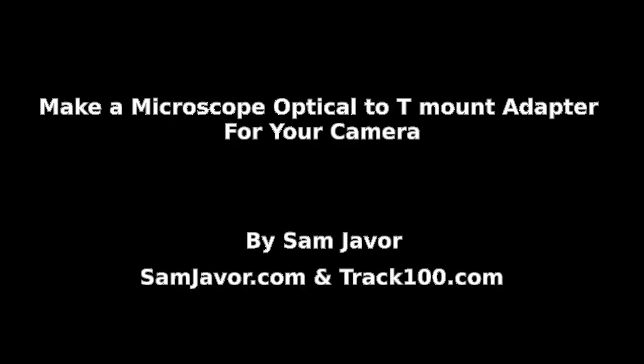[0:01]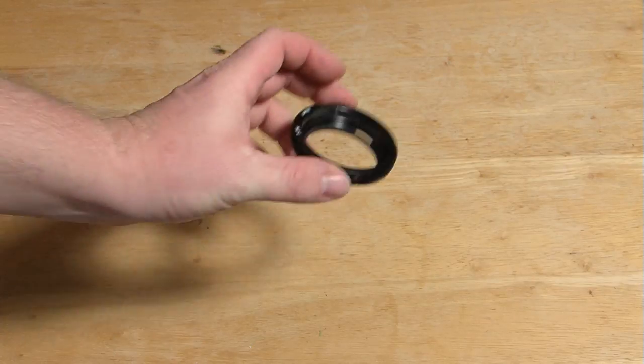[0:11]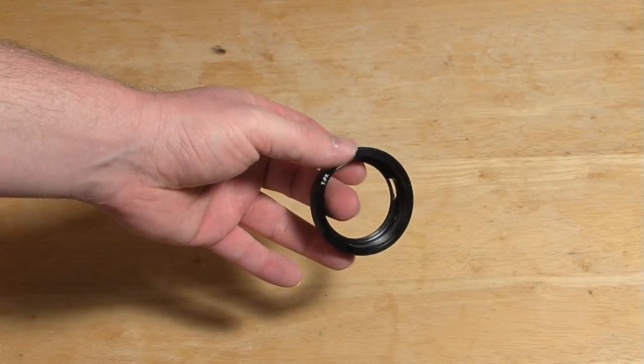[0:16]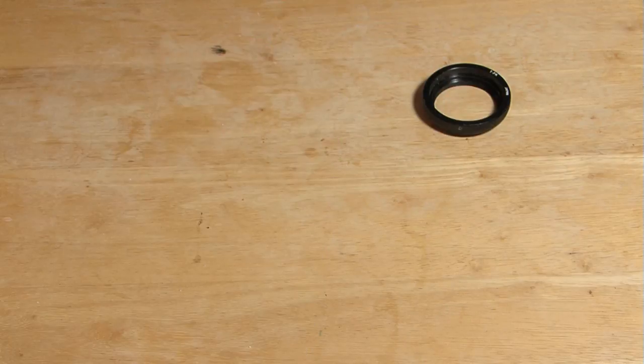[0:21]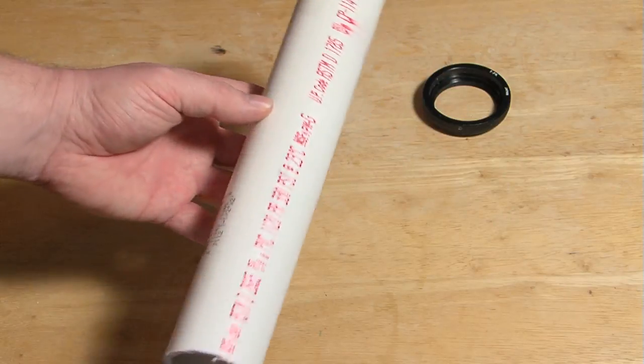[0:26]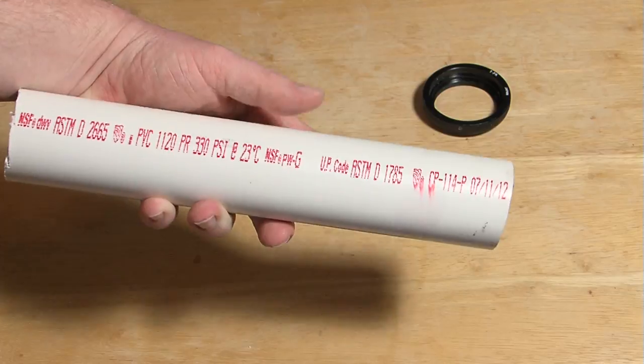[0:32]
I'm going to show you how to inexpensively mount a microscope optical to a camera. You will need a T-mount adapter for your camera. I use Pentax cameras, so this is a T-mount to Pentax K-mount. You will also need a short length of PVC pipe. This is 1.5 inch PVC. It's very important that it's 1.5 inch because this actually fits right into a T-mount.
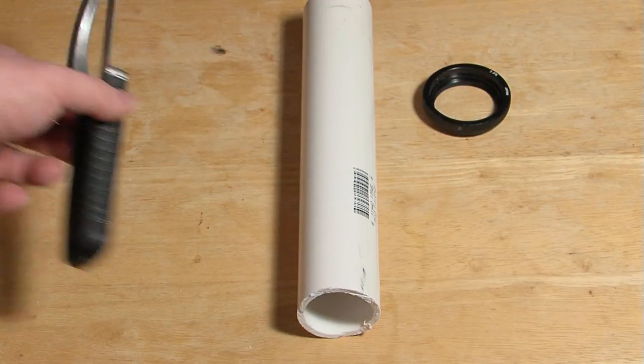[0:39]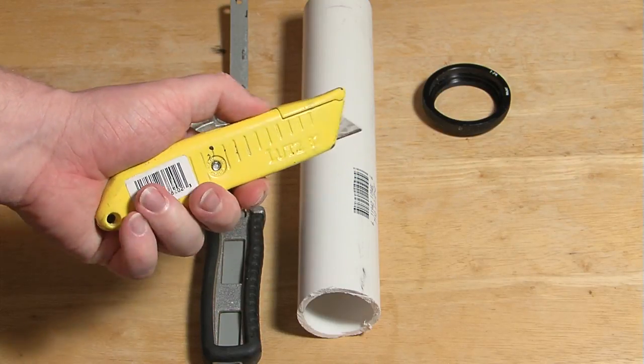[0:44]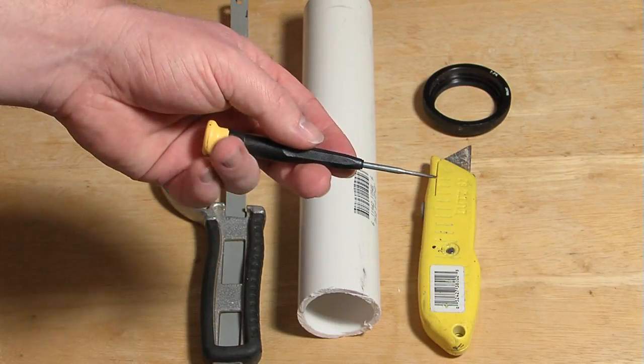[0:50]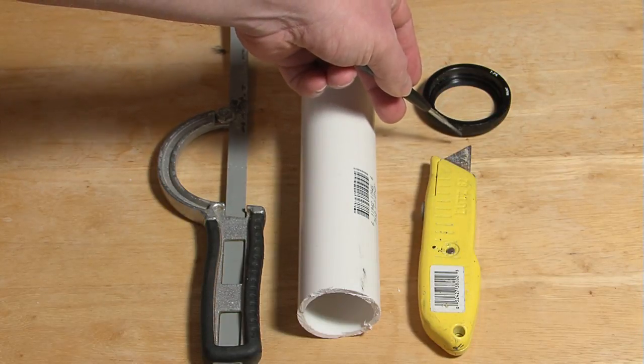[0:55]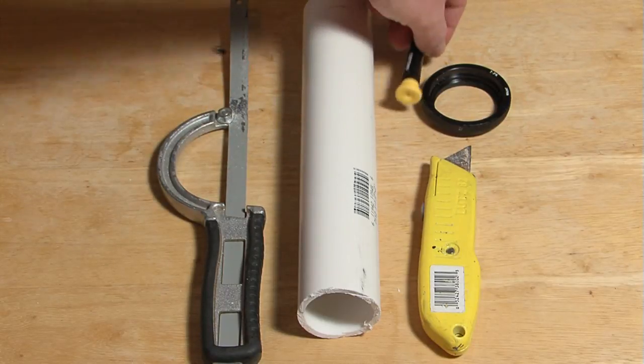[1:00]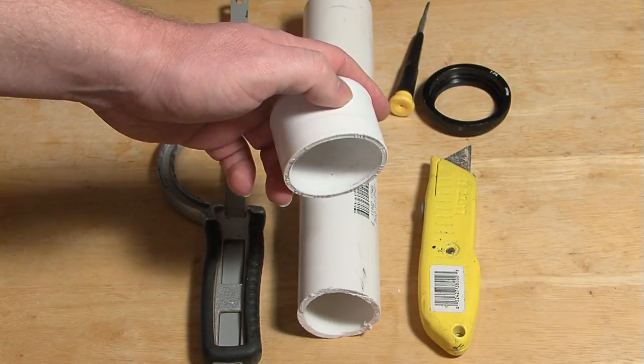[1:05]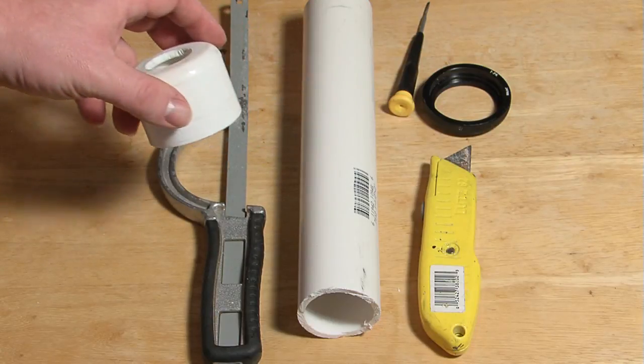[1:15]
You will also need a saw, a box cutter, or other knife, a small screwdriver, and this is used for operating the screws used to attach the T-mount adapter to the T-mount that we are going to create out of the PVC. A PVC end cap. I've already cut a hole in this one, but I will be explaining that.
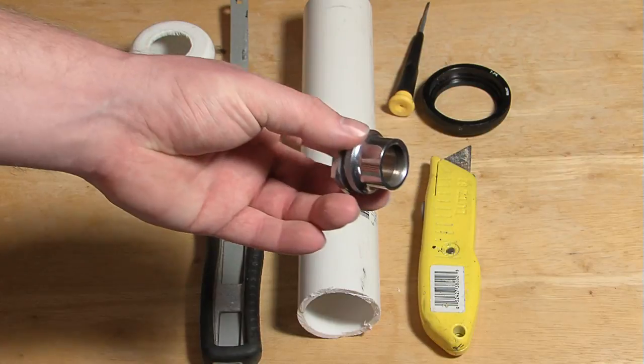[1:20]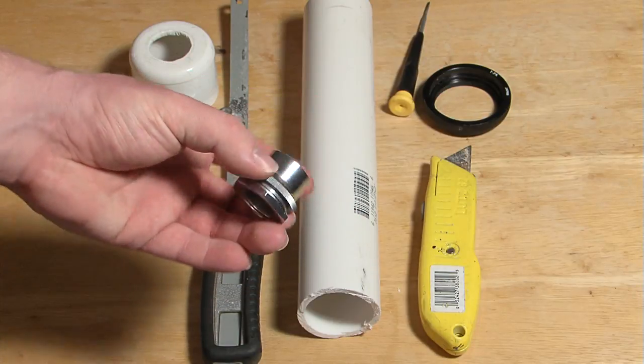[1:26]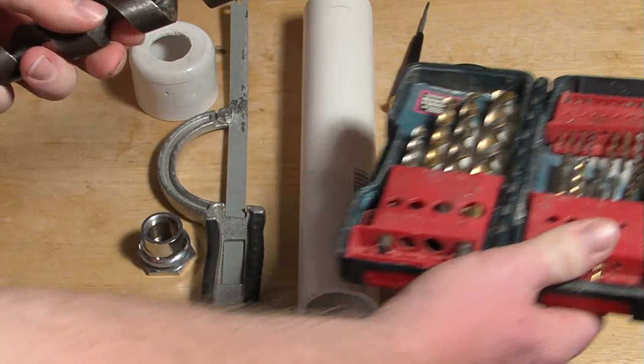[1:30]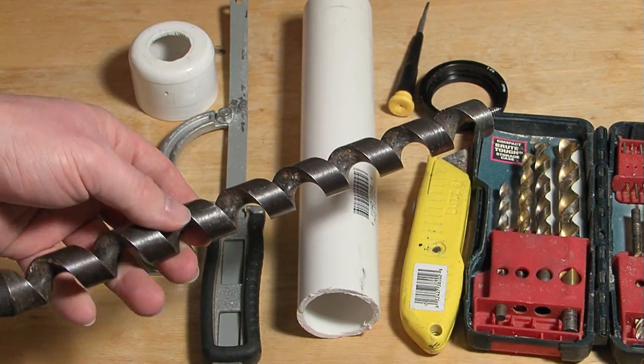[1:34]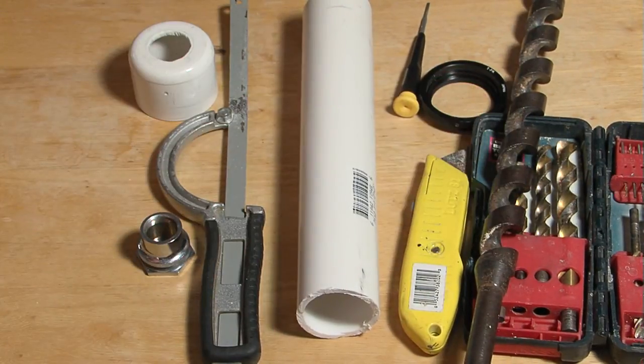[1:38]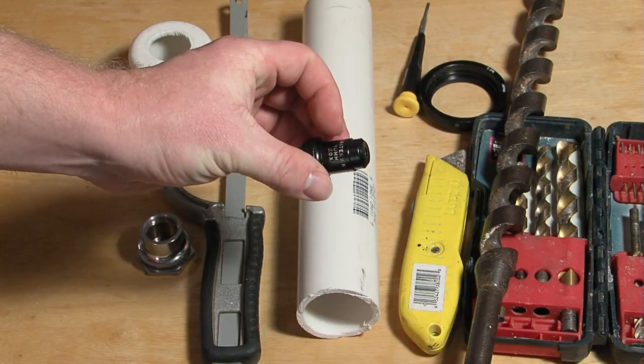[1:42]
You will also need a microscope optical mount. This allows for the quick and easy removal of the actual microscope opticals. A set of drill bits. And possibly an auger. And finally, a microscope optical.
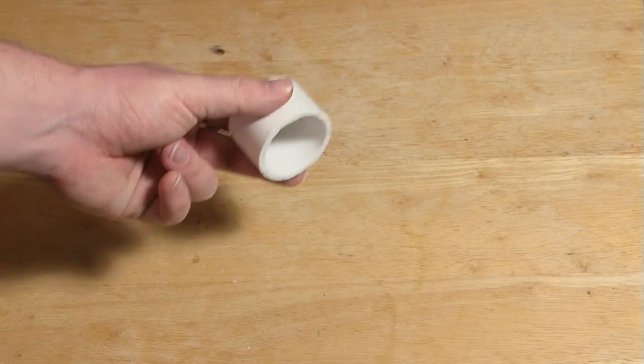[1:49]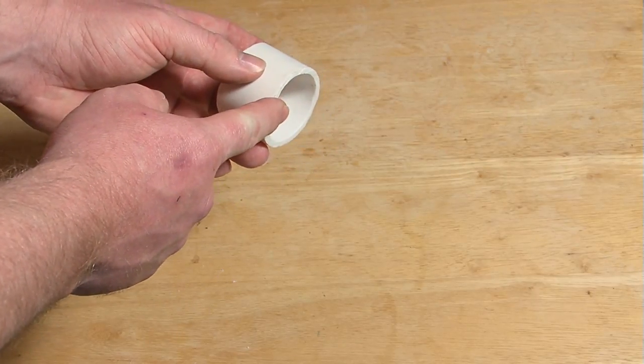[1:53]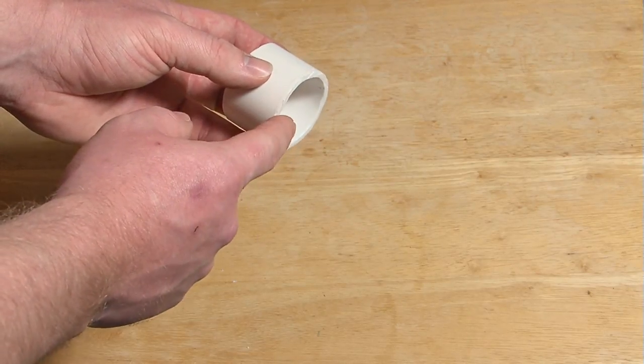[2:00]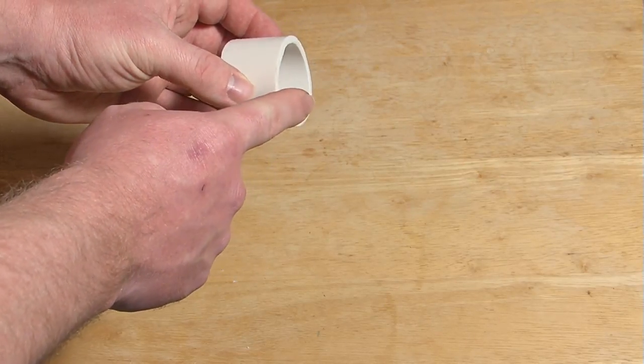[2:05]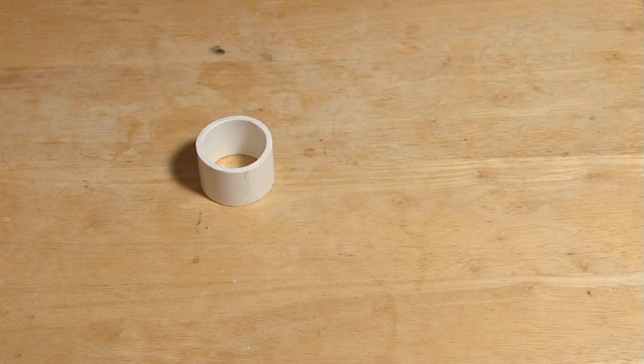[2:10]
We are going to begin by cutting the short length of pipe into an even shorter length of pipe. The important thing is to make sure that at least one end is flat, because this is going to be mounting into the T-mount itself, and there's not a whole lot of room for having a rough edge like you would on the cap end. You can do this in a couple ways. Hopefully you have a new piece of pipe and the factory has already cut a flat end on one end.
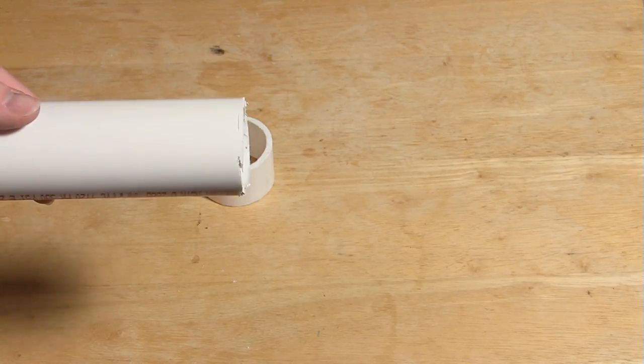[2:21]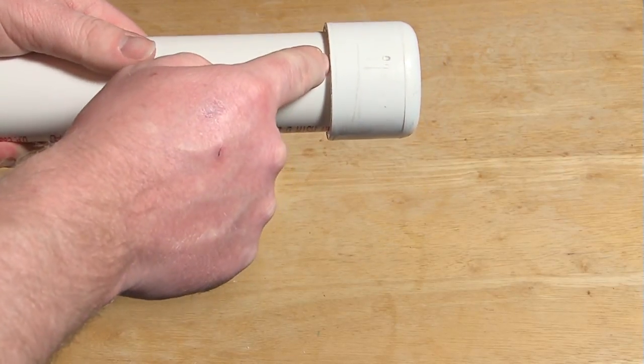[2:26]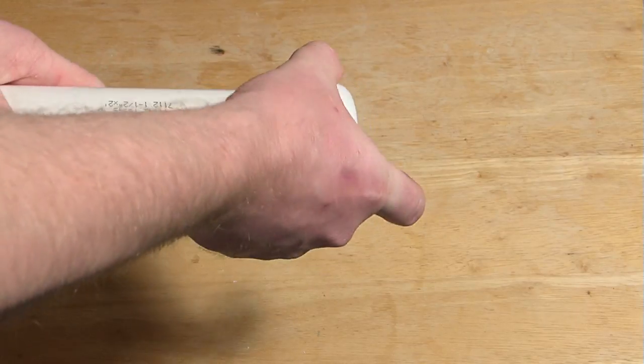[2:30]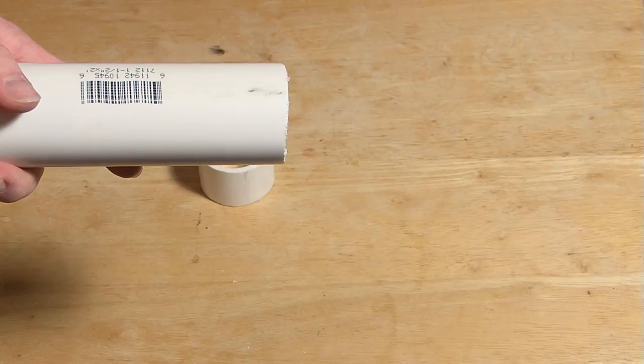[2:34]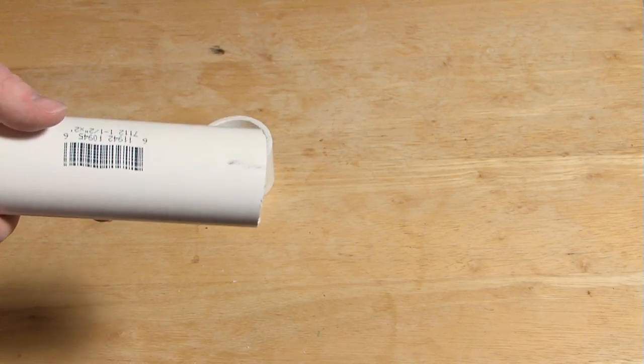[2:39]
However, if you don't, you can take the piece of pipe and put the end cap on and then with a pencil write a line all the way around, take the cap off, and then just cut along the line the entire circumference of the pipe. That should give you a straight enough edge. In fact, that's what I did on this one.
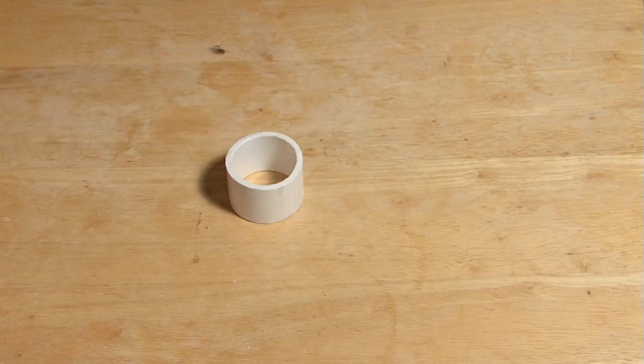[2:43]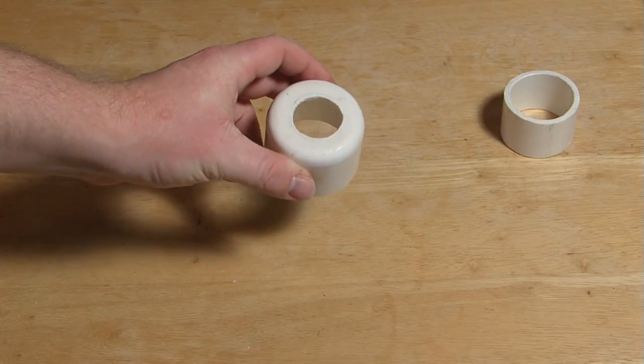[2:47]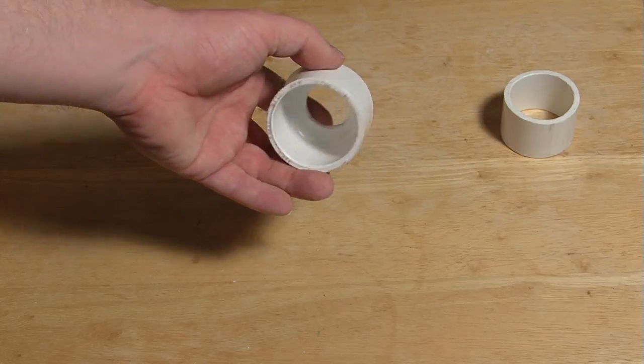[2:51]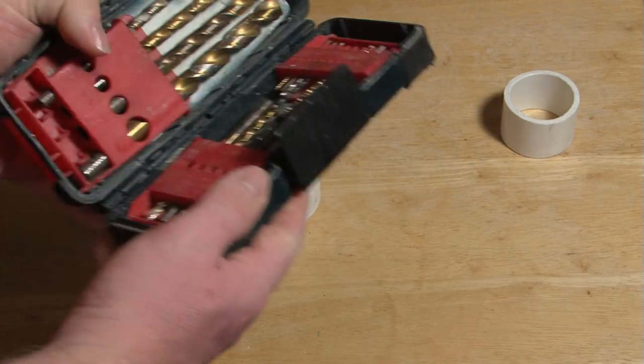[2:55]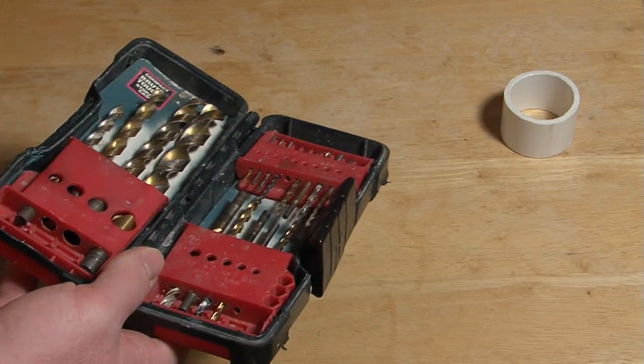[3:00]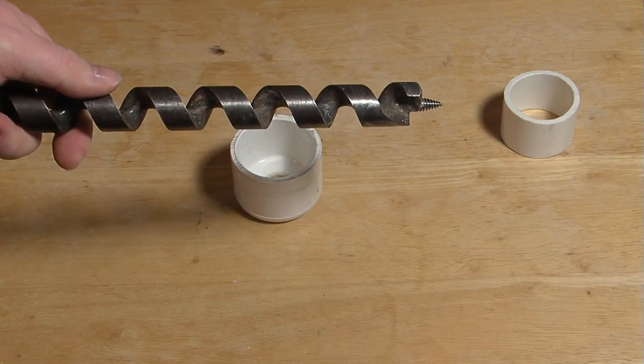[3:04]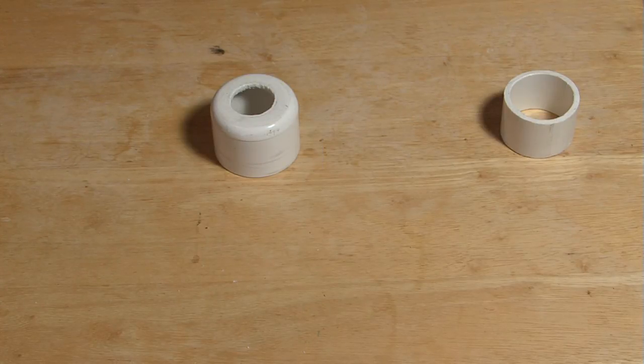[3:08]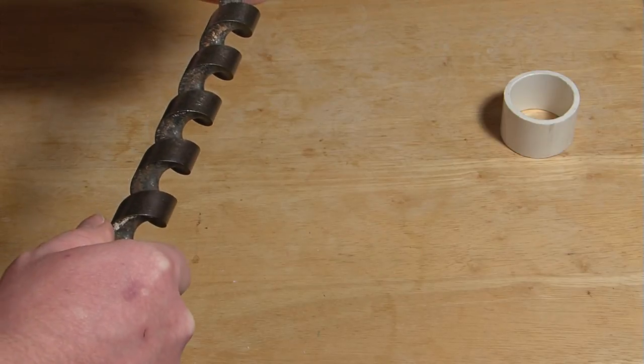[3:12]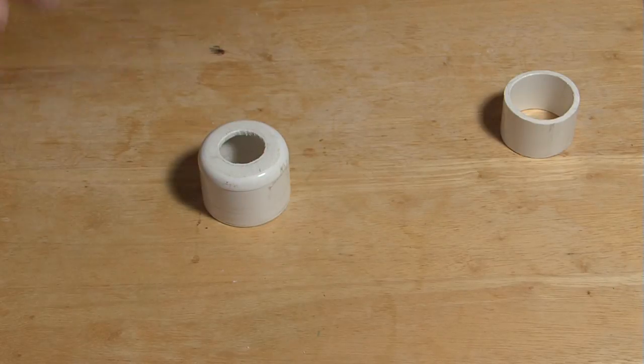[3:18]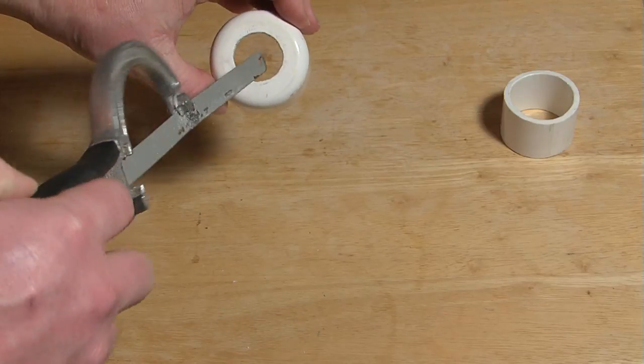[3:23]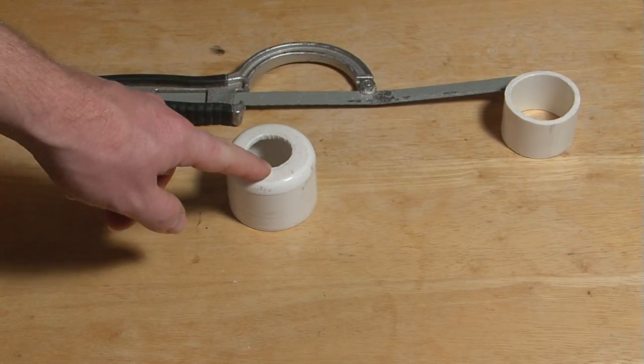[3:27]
Now the difficult part. We need to cut a hole inside this cap. The best way to do this is to drill a small pilot hole with one of the small drill bits, and then enlarge the hole. You may have an auger that can significantly enlarge the hole. The problem that I ran into is that my auger is still too small for the hole. So I drill the hole as large as I could, and then I take the saw and just score around the edge of the hole to slowly enlarge it. It's tedious. It is important to make sure that the hole stays fairly centered and as round as you can possibly keep it.
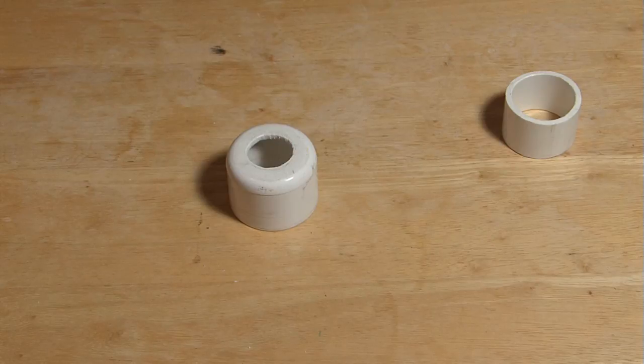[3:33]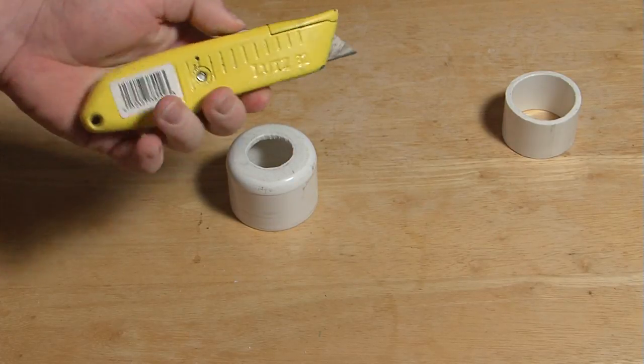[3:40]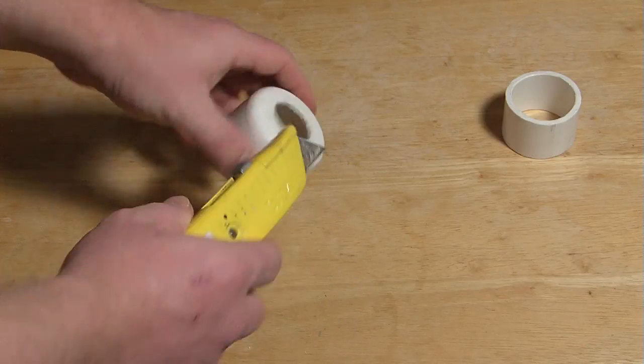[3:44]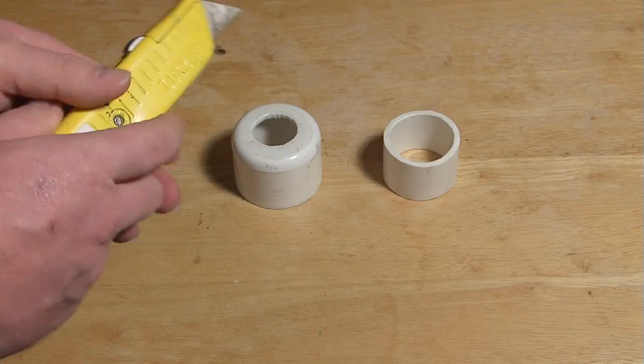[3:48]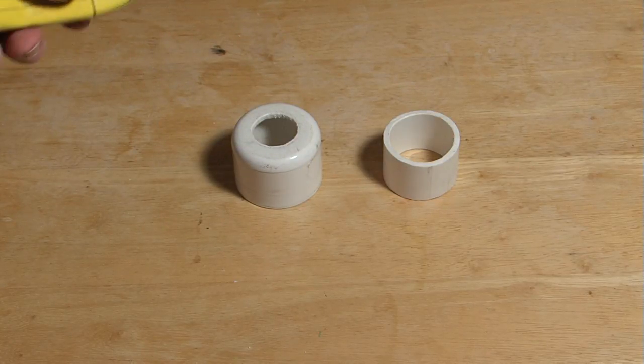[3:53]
When that is complete, simply take the box cutter and clean off any plastic burrs that you may have in any of the pipes. You don't want any frayed PVC bits. It'll be fairly obvious if you've ever cut PVC. Then that's pretty much it. All that needs to be done is assembly.
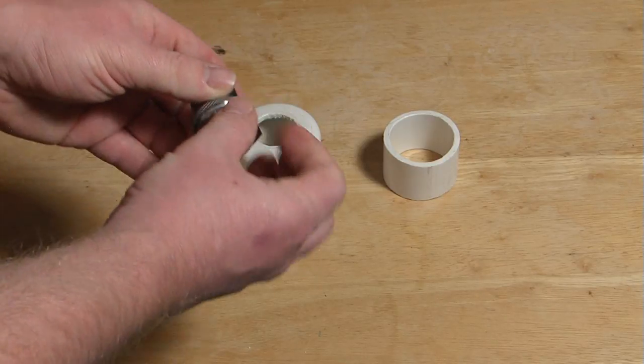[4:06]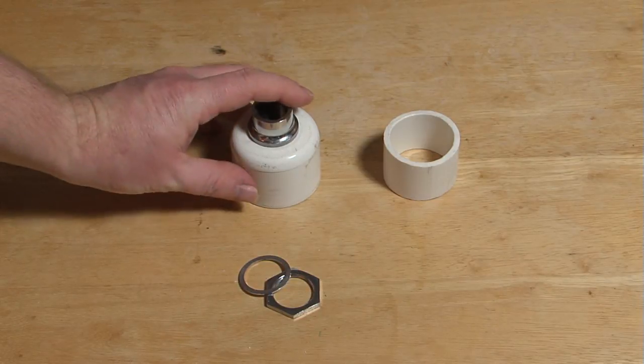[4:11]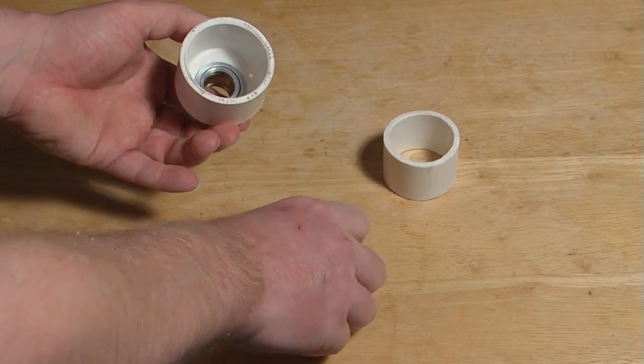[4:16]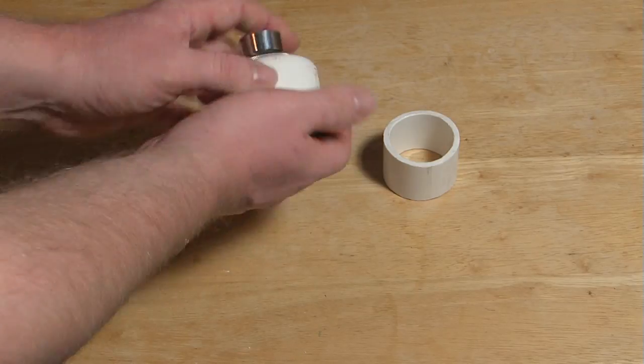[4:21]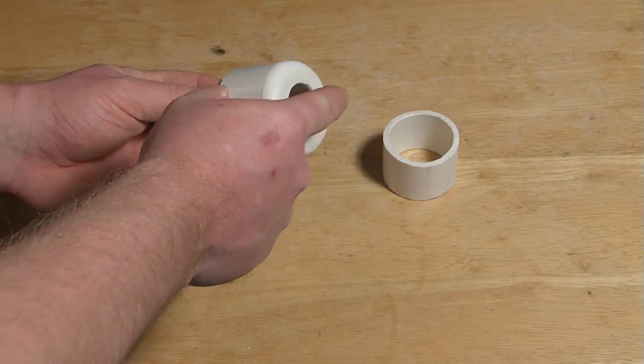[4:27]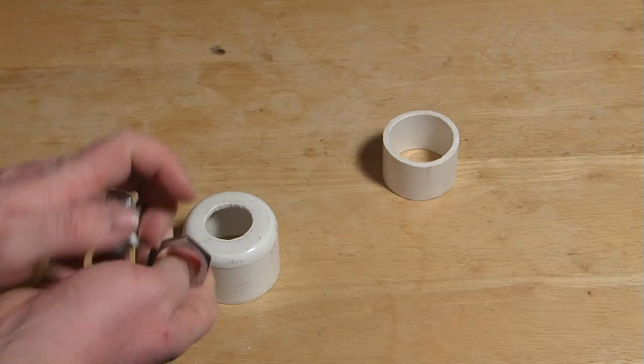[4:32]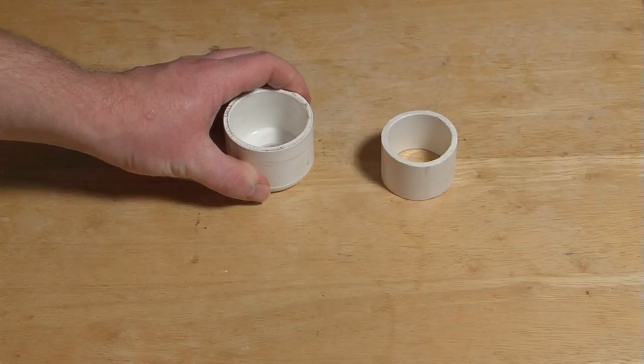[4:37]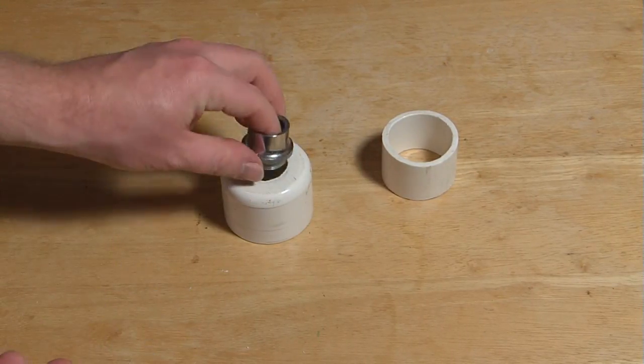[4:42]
We're going to begin by putting the microscope mount into the hole. Mine comes with a washer. We're going to place that in, and then the washer attaches inside. One thing to keep in mind, depending on your PVC end cap, mine was originally too thick for this nut to fit on the thread. To correct that, I laid down a piece of sandpaper and then just sanded it flat. It worked pretty well and was fairly quick.
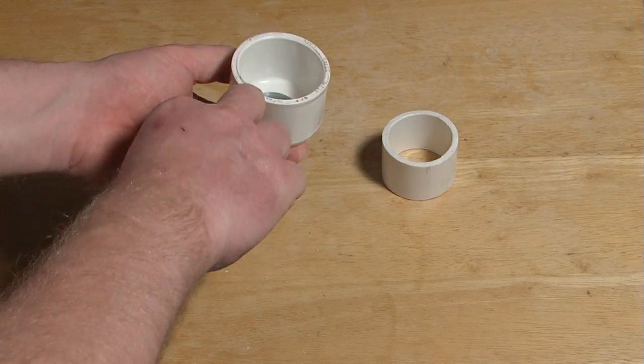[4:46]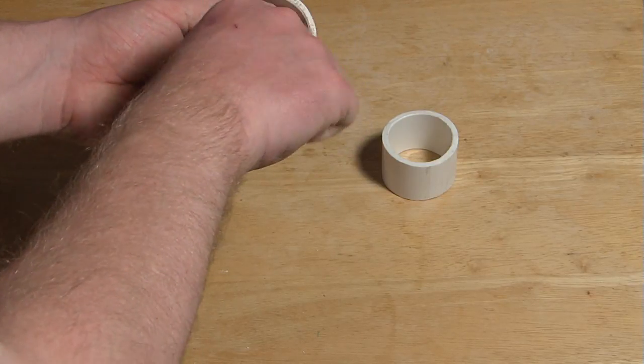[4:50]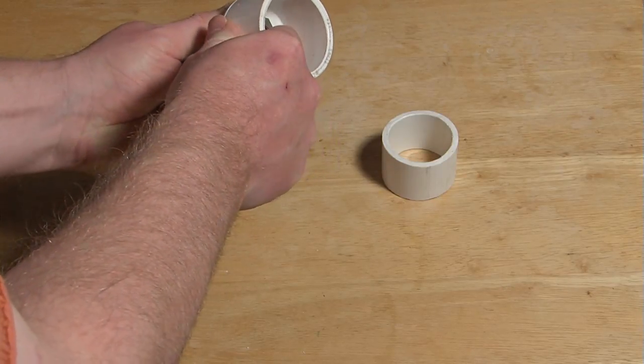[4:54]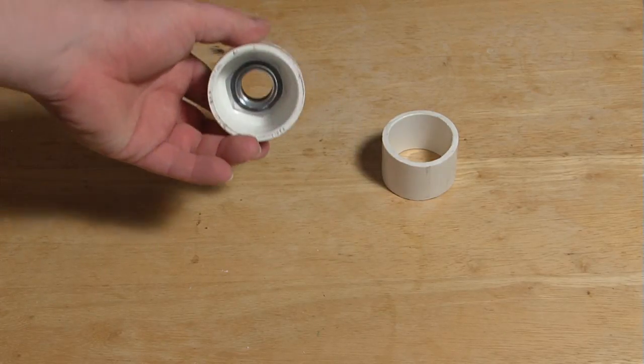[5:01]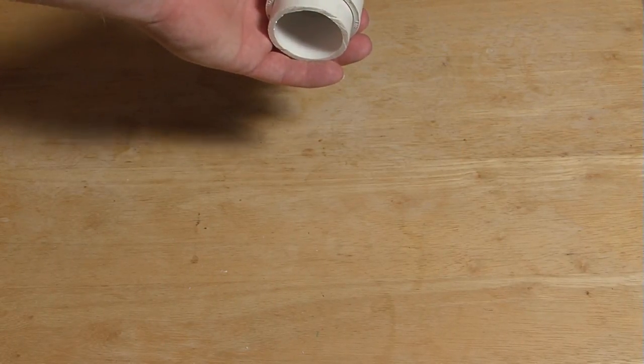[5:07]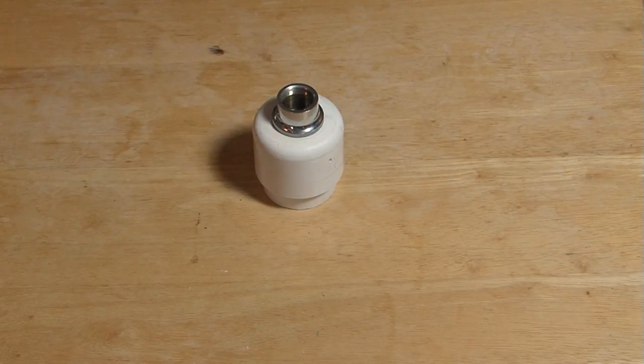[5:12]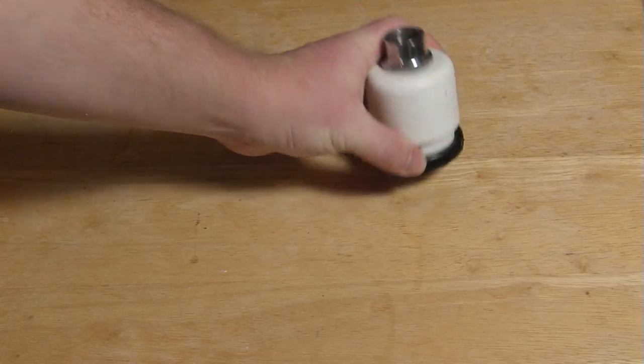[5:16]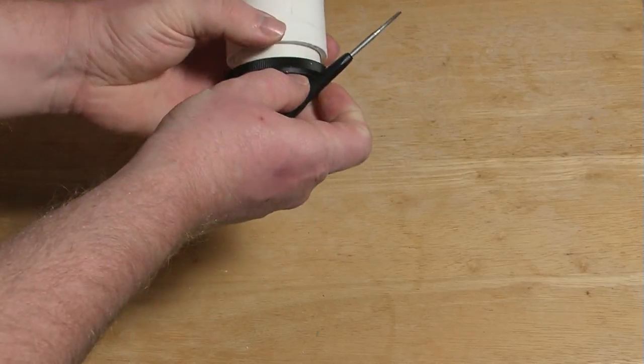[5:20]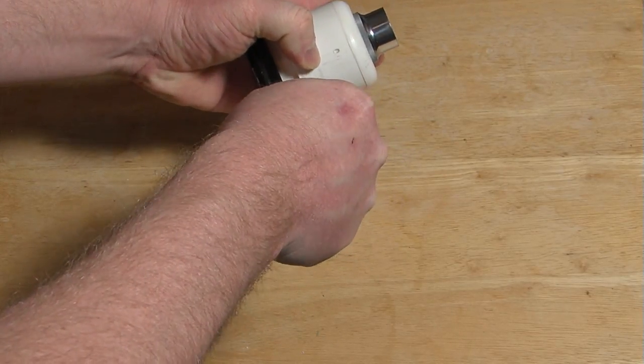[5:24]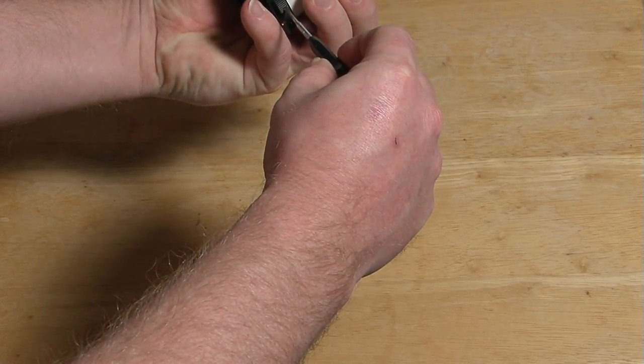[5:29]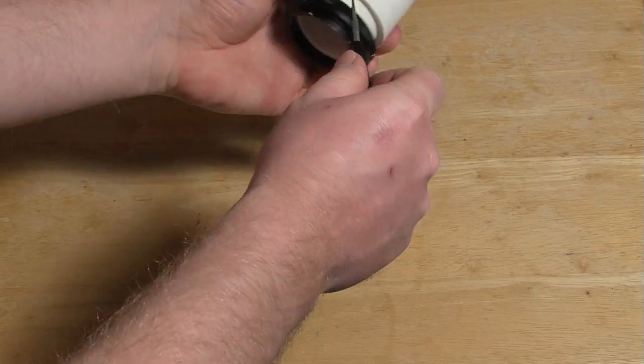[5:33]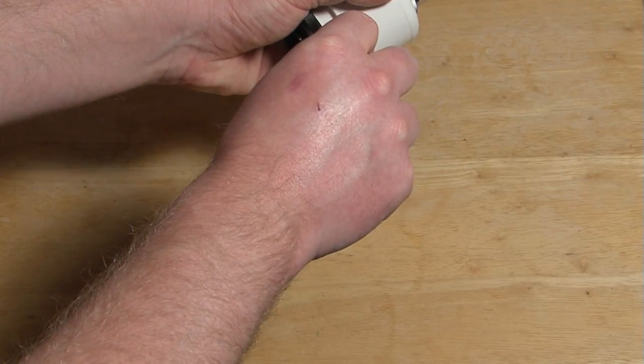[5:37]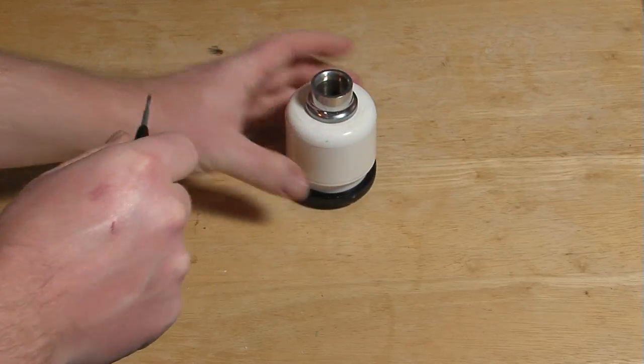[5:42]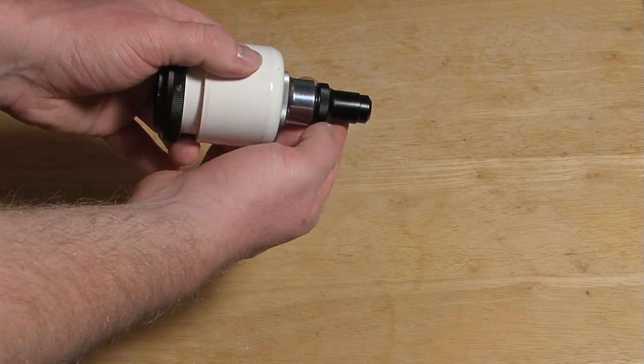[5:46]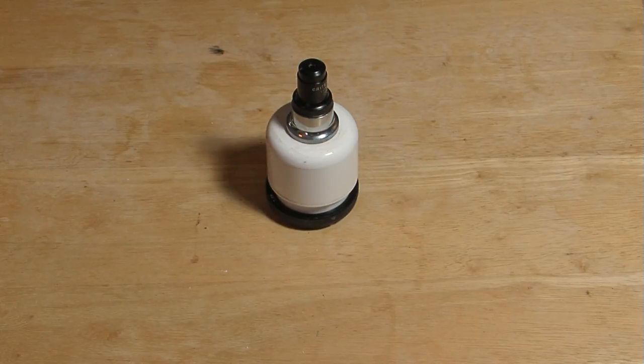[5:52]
Okay. So the microscope mount is attached to the PVC end cap. And then we place the PVC end cap on our short length of pipe. Believe it or not, this is done. That's it. We can take our T-mount, put the PVC pipe on the T-mount, tighten the screws, which are actually mounted into the PVC. And then all you have to do is put your microscope optical in the mount. There you have it, an inexpensive and fairly accessible method to mount microscope opticals to your camera.
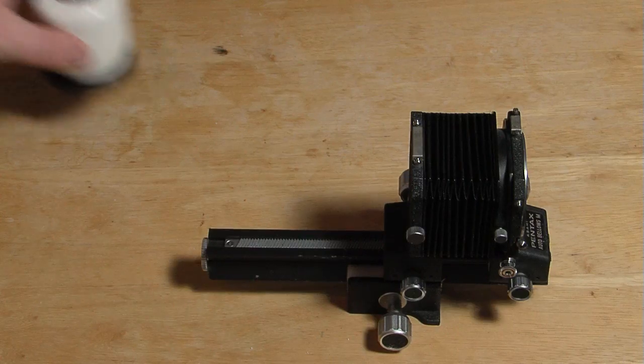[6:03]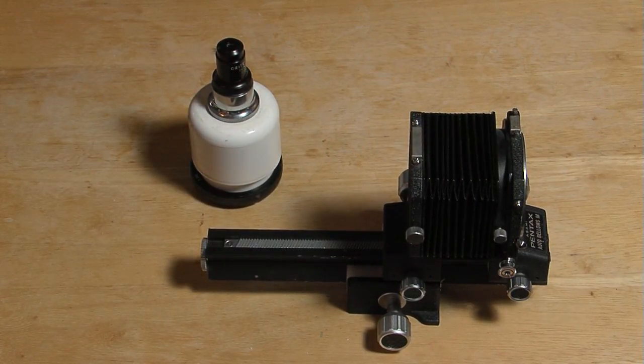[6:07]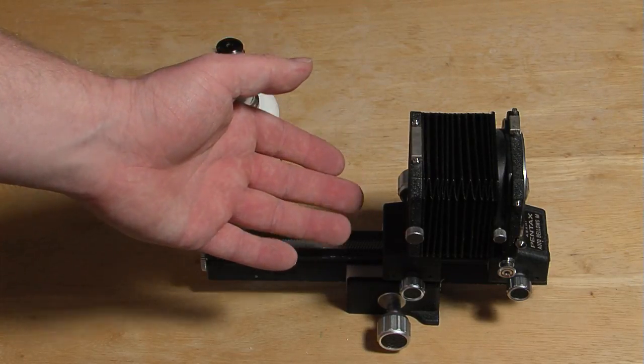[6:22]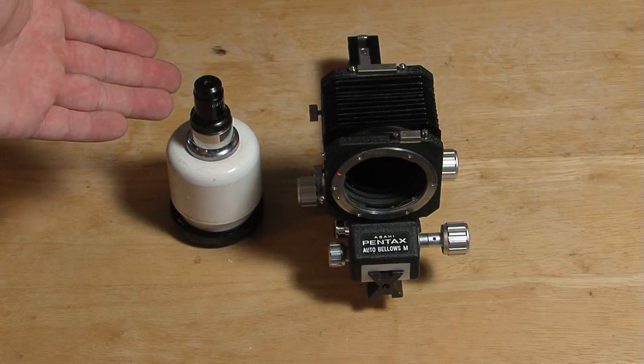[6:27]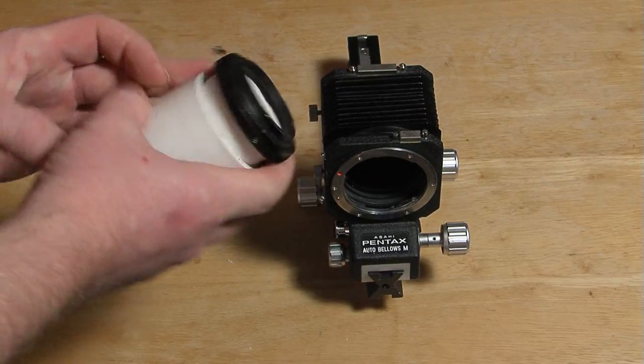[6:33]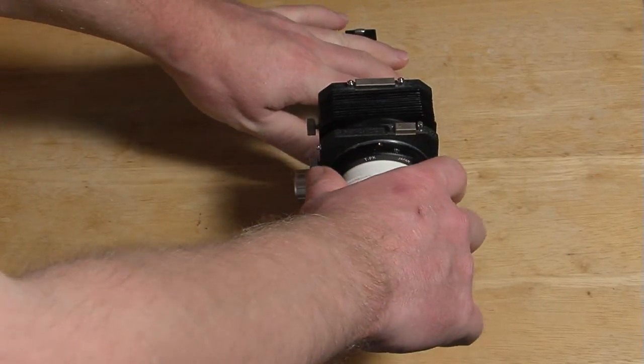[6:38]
Typically, I would show the finished product attached to the camera, but my DSLR is currently doing a time lapse for the next week or so. One accessory that might come in useful that you may already have if you're into macro photography is a macro bellows system. This is the Pentax system. And now that we already have the microscope objective mounted to a T-mount adapter that fits Pentax K-mounts, all I have to do is line up the orange dots and mount it.
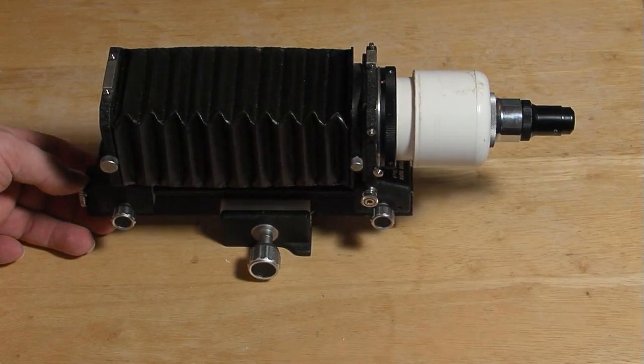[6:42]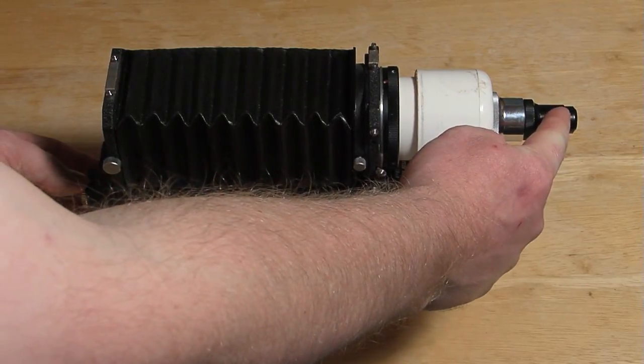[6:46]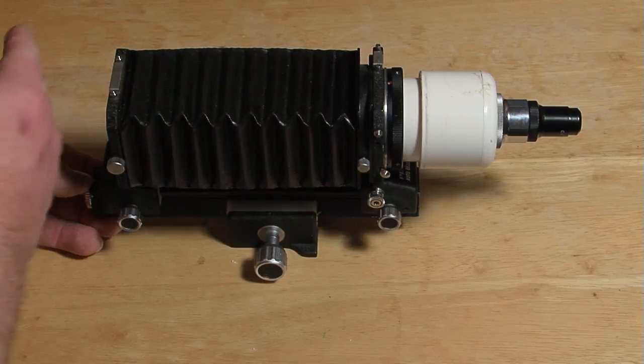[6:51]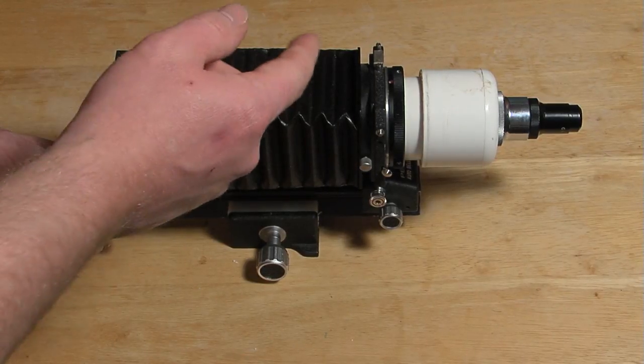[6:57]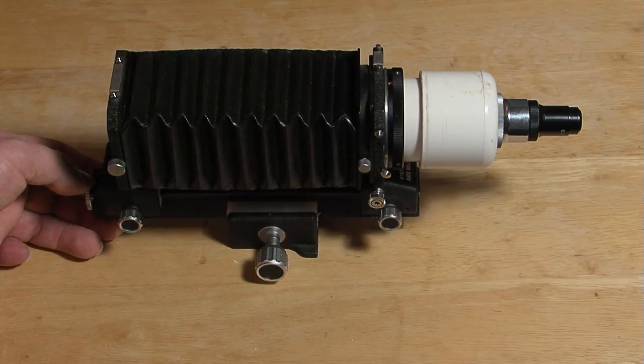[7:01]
This is very useful because the optical is going to project an image to the back of the camera. And if the camera moves further away from the optical, the image actually enlarges. So this allows you to take a low power optical and zoom in on whatever it is that you're trying to get a micro photograph of. This can get very close on things.
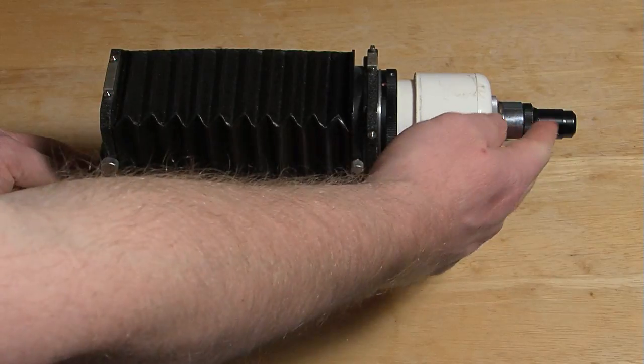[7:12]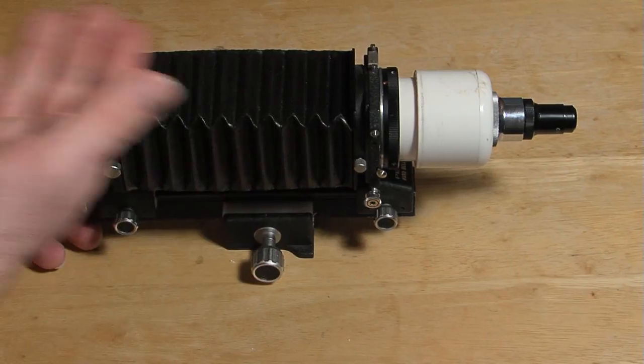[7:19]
This is a 20x optical, and if I point it at a computer screen, using this type of system allows you to adjust the magnification on your image without having to change the optical. So if you have a 4x optical and a 10x optical, you can mount the 4x and get pretty close to every range in between it and a 10x optical. This allows greater flexibility in your optics and more creative control over your image.